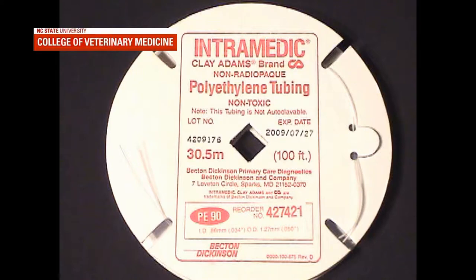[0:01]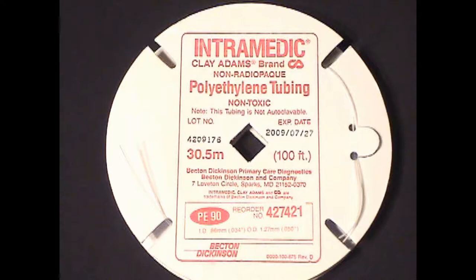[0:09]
This video provides instruction for how to fashion wound infusion catheters from medical-grade polyethylene tubing. You will need three specialty items for this: the polyethylene tubing, stub adapters, and ethylene oxide gas sterilization packs. We use the Intramedic brand of medical polyethylene tubing, part number 427421.
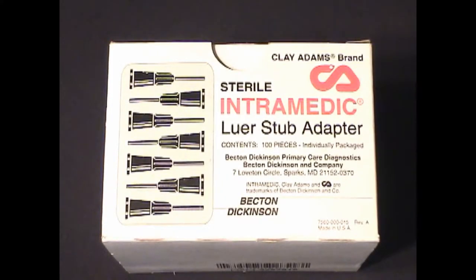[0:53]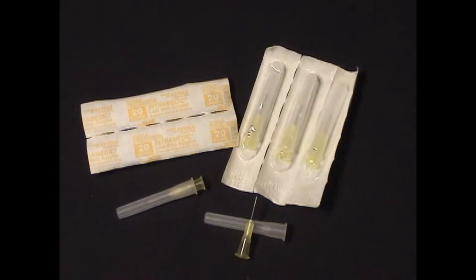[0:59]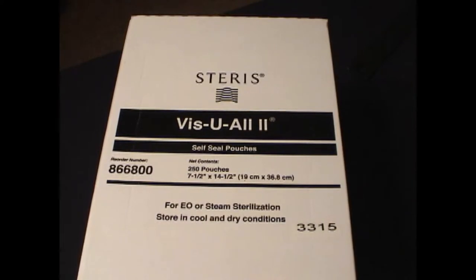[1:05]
This product has an internal diameter of 0.034 inches and an external diameter of 0.05 inches, and as of July 2018 was available from several vendors online in 100-foot rolls for about $326. To adapt the tubing to a syringe, you will also need to purchase luer stub adapters. We use the Intramedic brand of this as well. A 20-gauge adapter will fit into the polyethylene tubing, and they come as individually wrapped units in a box of 100 for about $250. The sterilization packs we use are the Steris Vis-U-All II, part number 866-800.
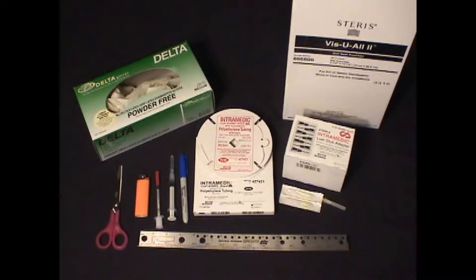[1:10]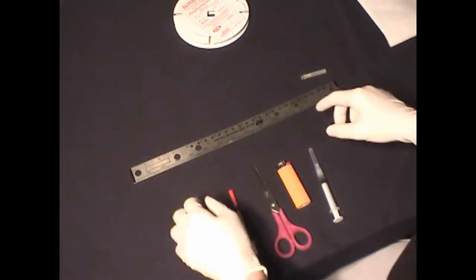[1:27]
The remaining materials you need include gloves, a ruler, scissors, a cigarette lighter, a 3 mL syringe, an insulin syringe with a 27 gauge or smaller needle, and a Sharpie marking pen. The first step is to cut some tubing to the desired length.
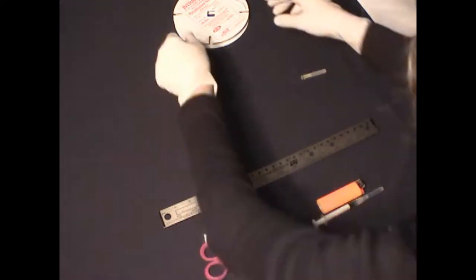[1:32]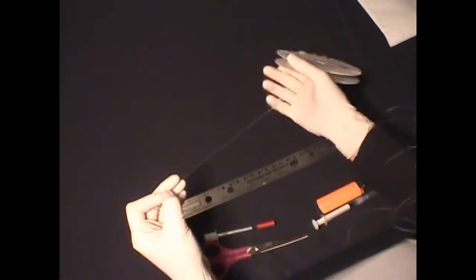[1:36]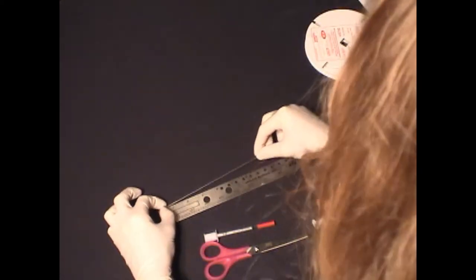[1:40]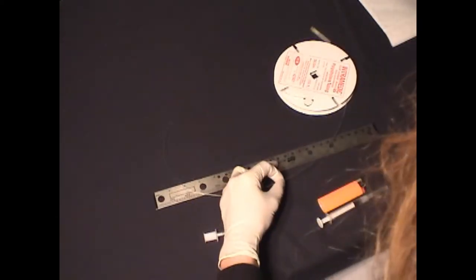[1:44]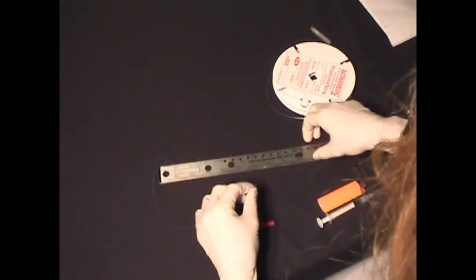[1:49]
The two dimensions to consider are the total length of the catheter and its working length, which is the portion of the tube that will contain the drug delivery fenestrations. In general, you will want a range of working lengths from 2 inches up to about 10 inches. Longer working lengths will result in uneven drug distribution and should be avoided.
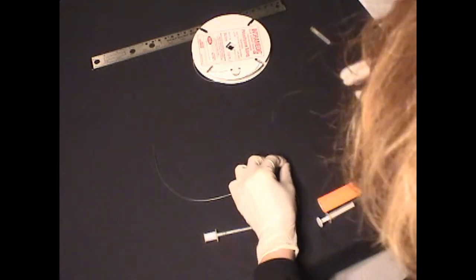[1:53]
You will also want enough non-fenestrated catheter length between the stub adapter and the first fenestration to create adequate room for tunneling the device between the point of entry in the skin and the area where anesthesia is desired. In this example, we are cutting tubing to 12 inches total length, and our working length will be 4 inches.
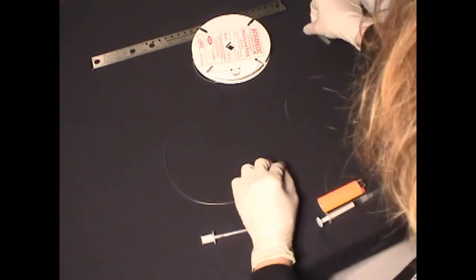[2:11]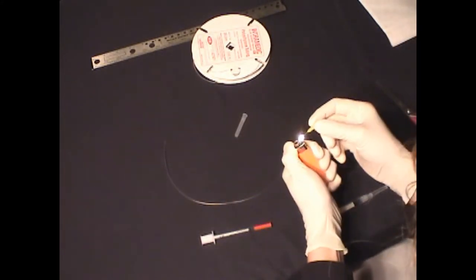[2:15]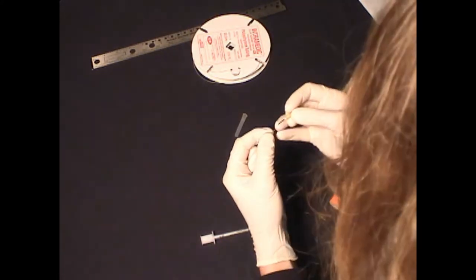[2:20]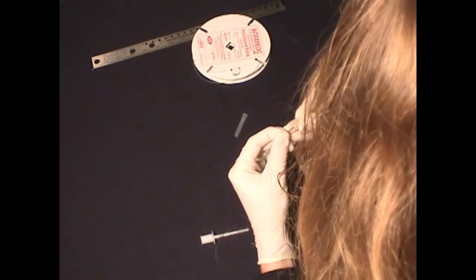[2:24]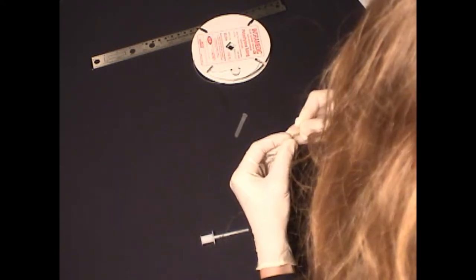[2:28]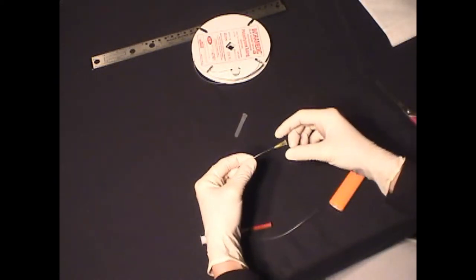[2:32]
After cutting the tubing, the next step is to attach the stub adapter. The metal portion of the adapter is heated in the cigarette lighter flame for about 1 second and then inserted into one end of the tubing. Polyethylene is nice to work with because the heated stub adapter will slide into the tubing easily and then bond with the tubing as it cools, forming a tight connection.
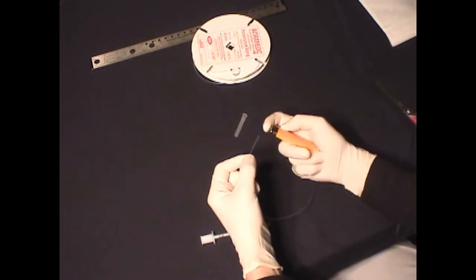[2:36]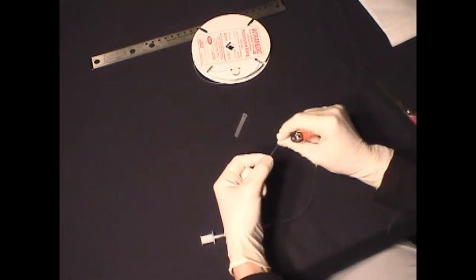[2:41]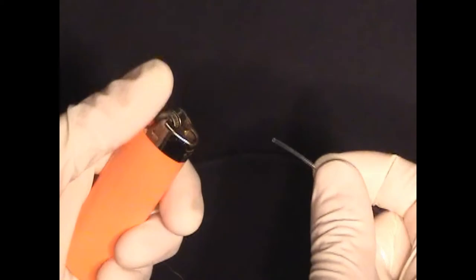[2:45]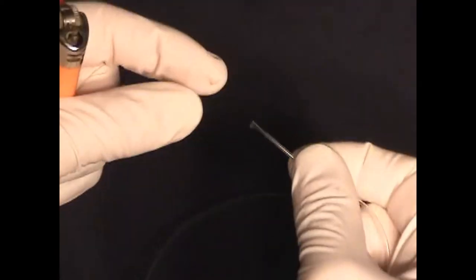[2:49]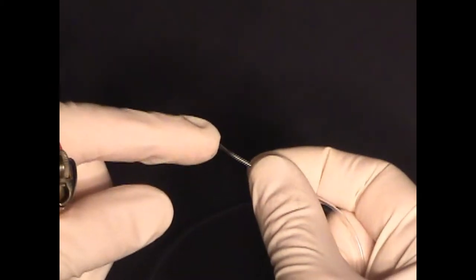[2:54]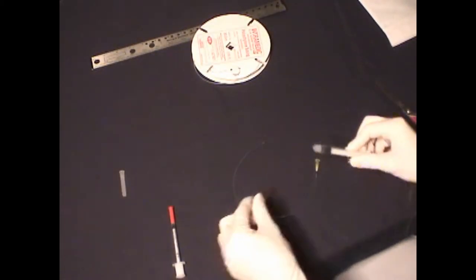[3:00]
Next, we need to seal the end of the catheter. Here again, the polyethylene tubing is nice to work with because you can put the catheter end directly into the flame for a second or so, and then use your gloved hand to pinch the softened material together to form a tight seal. This seal must be tested by connecting the empty 3 mL syringe and then attempting to inject about 1 mL of air into the tubing.
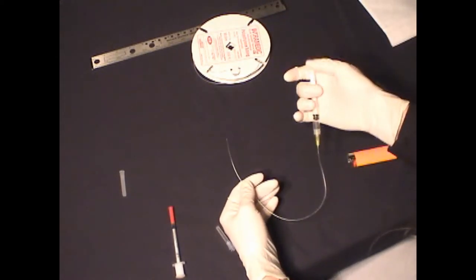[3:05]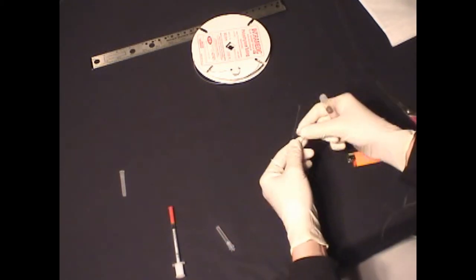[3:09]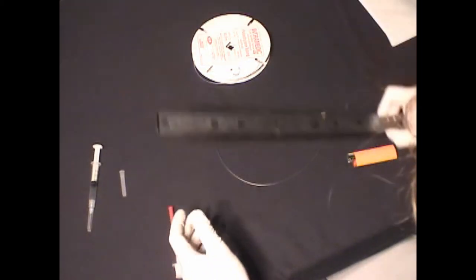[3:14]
The plunger should spring back to its original position. If it does not, there's a leak in the system, most likely at the sealed end of the catheter, in which case it will need to be reheated and sealed again.
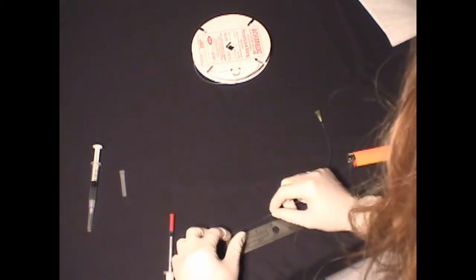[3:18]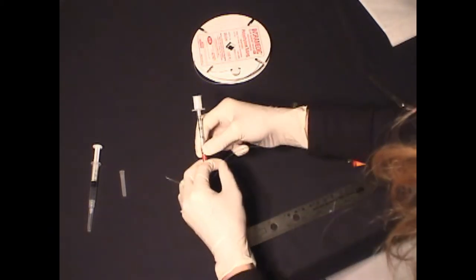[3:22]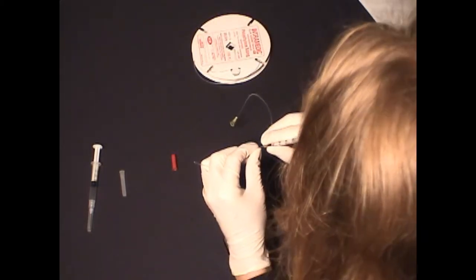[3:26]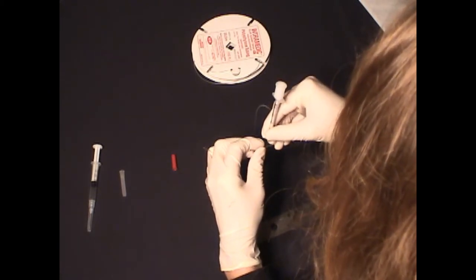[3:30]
Once a complete seal is confirmed, fenestration holes are created using the insulin syringe and needle. To do this, we note the desired location of the first fenestration closest to the luer stub adapter by measuring the working surface length with the ruler and creating the first pairs of holes at that site.
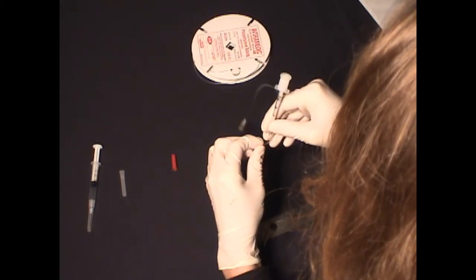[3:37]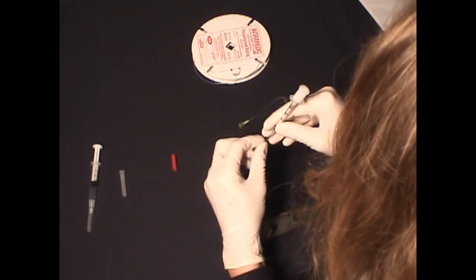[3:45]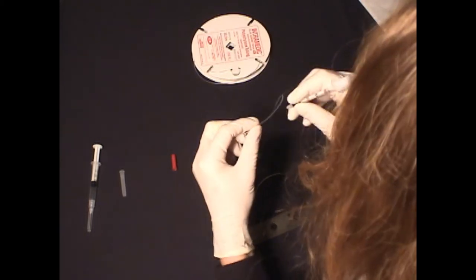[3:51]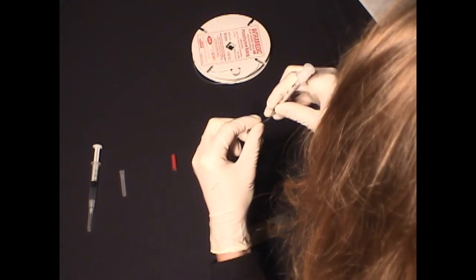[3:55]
The needle is stuck into the center of the tubing through both sides, beginning about 5 millimeters from the sealed end and spaced every 2 to 5 millimeters across the entire length of the desired working surface. Ideally, the tubing should be rotated slightly between each set of holes so the holes are not all oriented in the same plane.
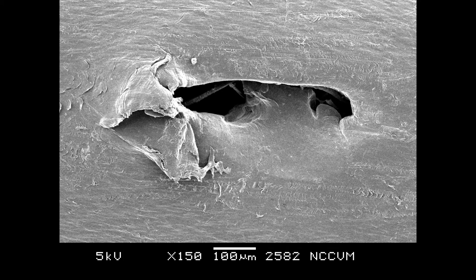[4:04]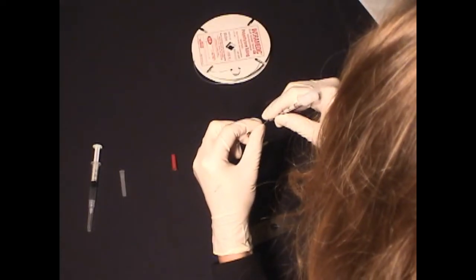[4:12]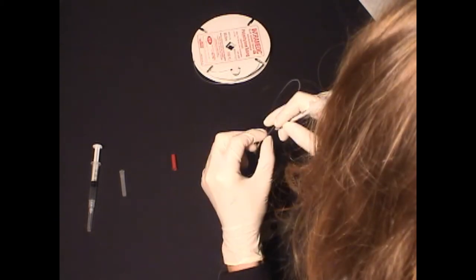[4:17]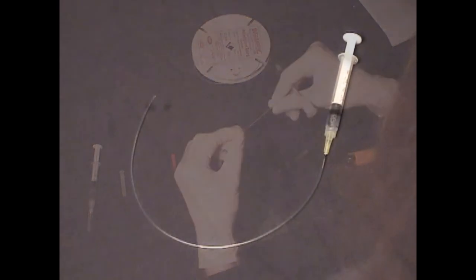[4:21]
Here is a scanning electron microscope image of a fenestration created with a 27 gauge needle. As you can see, these holes are very ragged and irregular and are partially obstructed by a flap of the polyethylene tubing material. This is actually important because we want a high amount of resistance to flow at each fenestration site to help ensure equal distribution of the material across its entire working length.
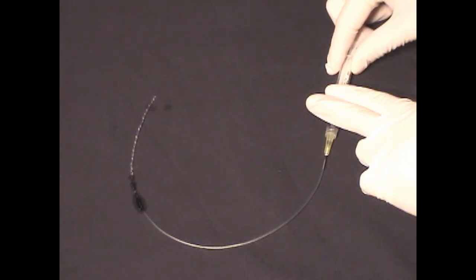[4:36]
Here is a demonstration of liquid distribution. As you can see, there are liquid droplets forming at every fenestration. Do not test your tubing this way prior to sterilization, as it is best to keep your patient tubing completely dry for that process.
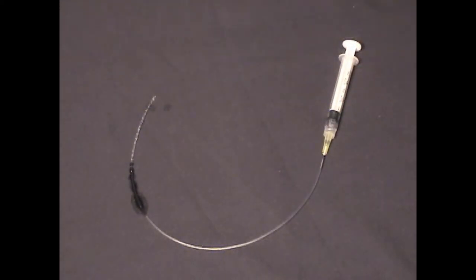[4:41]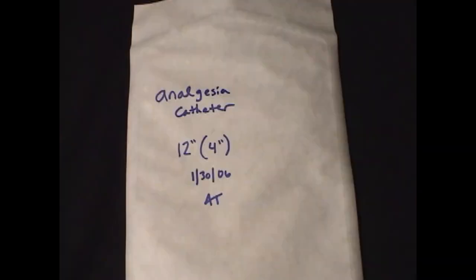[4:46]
Polyethylene tubing must be gas sterilized, as it will melt with autoclave heat. We mark the packaging with the total length, the working surface length, the date created, and the initials of the person who made the catheter. These may then be stocked in your surgical area and retrieved on an as-needed basis. Have fun with these.